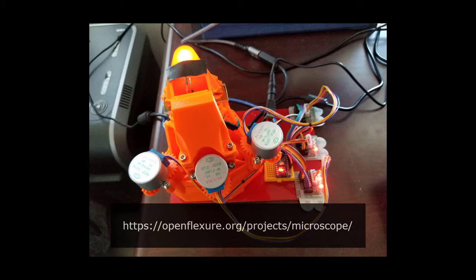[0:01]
Openflexure is an incredible open source project that brings lower cost and accessible microscopes to education in third world countries. There are a few different builds that can be done of an Openflexure microscope, ranging from a simple optical microscope with manual controls to high resolution optics using the same objective lenses as modern microscopes, with motorized autofocus, XY movement, and a camera to record what's seen.
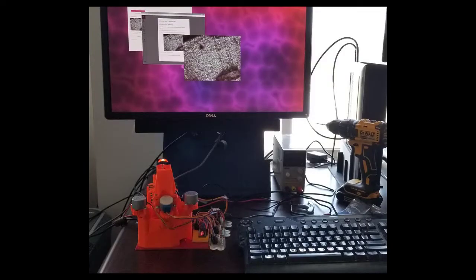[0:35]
I have chosen the motorized lower resolution optics build with Raspberry Pi Camera 2. This build lets you relatively inexpensively have a microscope that can take several pictures of a sample. These pictures can be stitched together with other software automatically into a larger picture.
When I set out to build this microscope, I found it would have been helpful to have a guide that focused on the specific build. I will take you from the beginning of all things you need for this build all the way through the process of stitching together pictures taken by the microscope. I hope you find it both helpful and informative.
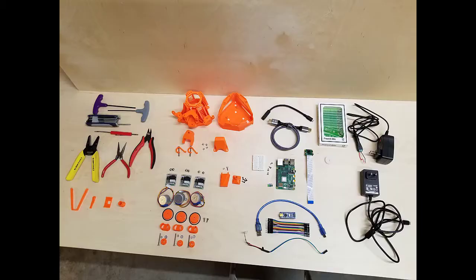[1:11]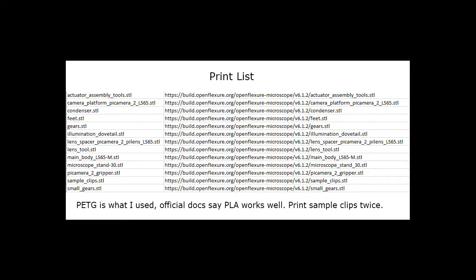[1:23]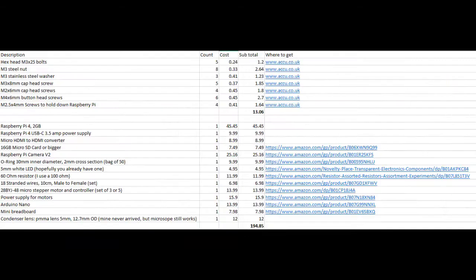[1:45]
And here is a quick view of all the things you will need: tools, printed parts, the motors, Raspberry Pi, something to look at, power. And here is a list of the parts that you'll need to print. Note that I did use PETG, but they say that PLA works well as well. And I mention this later in the video, but make sure you print the sample clips twice. They're actually two different parts, and I prefer one of them.
Here's a list of the non-printed parts you will need. Note that I did try the Raspberry Pi 3, but I found it was running out of RAM and crashing due to what I believe is the higher resolution Pi Camera V2. So I suggest going with the Pi 4 2GB version.
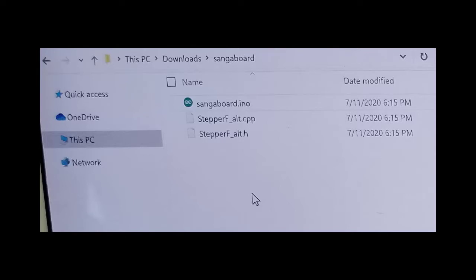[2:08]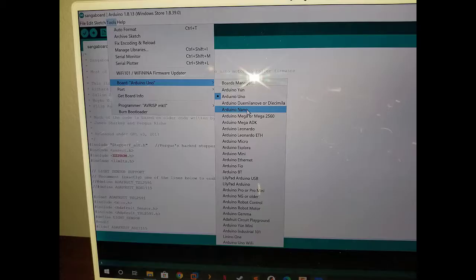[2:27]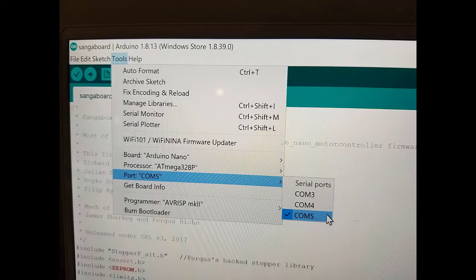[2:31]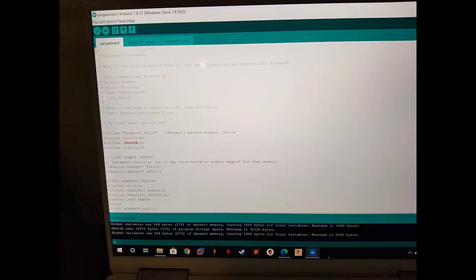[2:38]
Okay, really quickly, for the Arduino code loading to the Nano. When you download the files, make sure that you have them renamed. When I downloaded them from online, they had longer names, and you can get errors when you try to load them. So see what I have here, make sure your files look like that. Then in the IDE for Arduino, make sure you select the Nano as the device that you're writing to. Select the COM port. I find it's usually one of the highest numbers you can see in the list. And then click that button to load it.
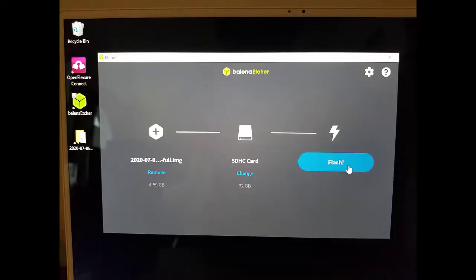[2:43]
Now download the image for the Raspberry Pi and burn it with the Etcher software to your SD card.
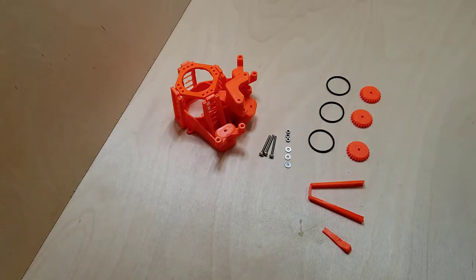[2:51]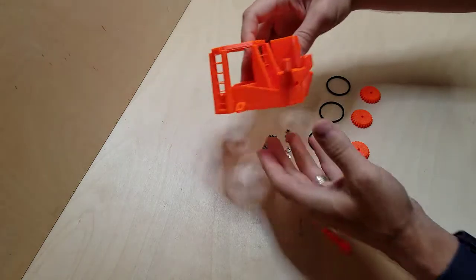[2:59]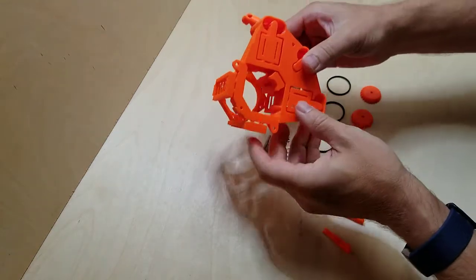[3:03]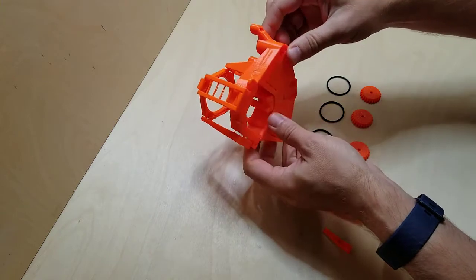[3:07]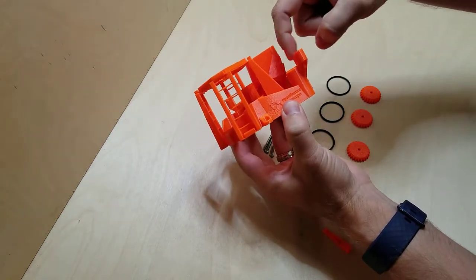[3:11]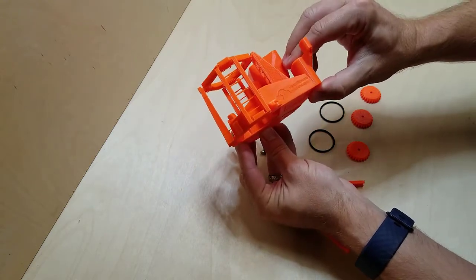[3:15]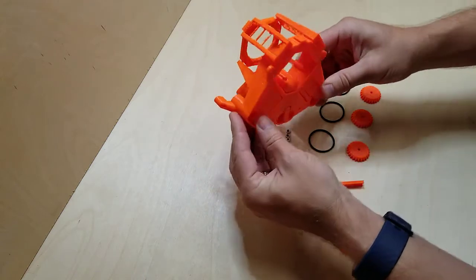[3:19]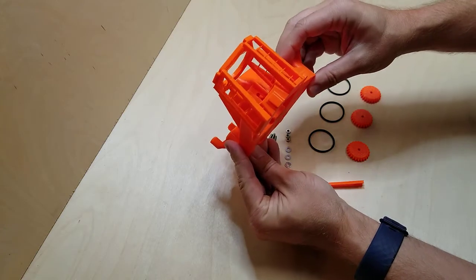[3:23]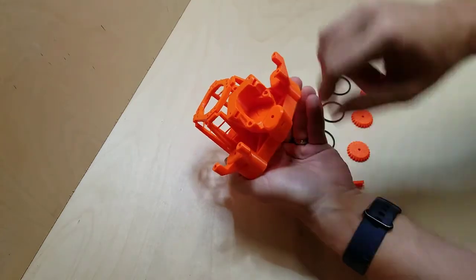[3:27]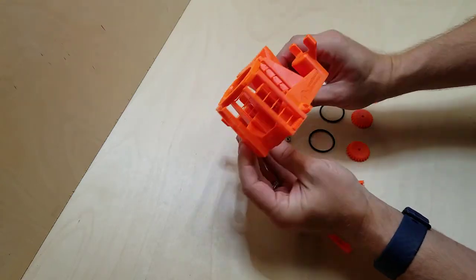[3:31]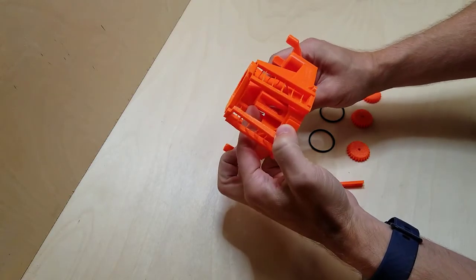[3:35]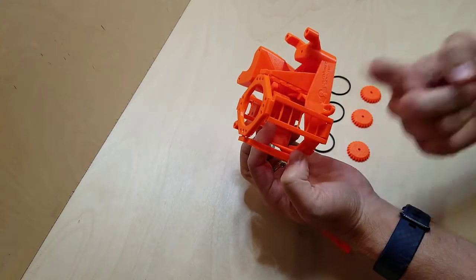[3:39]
All right, so I am assembling the actuators. This is one of the main pieces, the actuator piece. It is amazing what they're doing with flexure, the thing that gives Openflexure its name. So you can see that the control is going to be here, and when it pulls on this, it's moving in that axis, and this one over here is going to move it that direction. So X and Y are controlled by the two controls that will be here, and then Z here, this one is going to move this control in here that you can just barely see, and that's where the camera will be. So that provides autofocus capability.
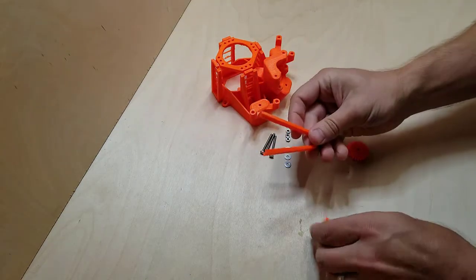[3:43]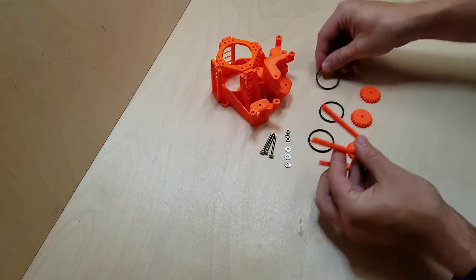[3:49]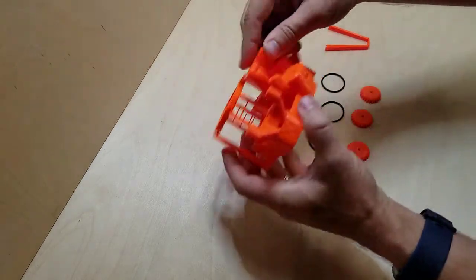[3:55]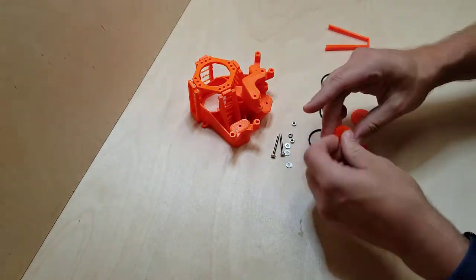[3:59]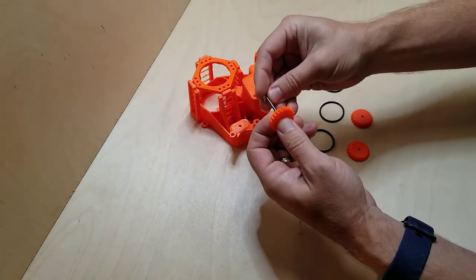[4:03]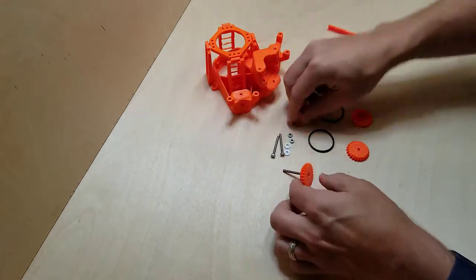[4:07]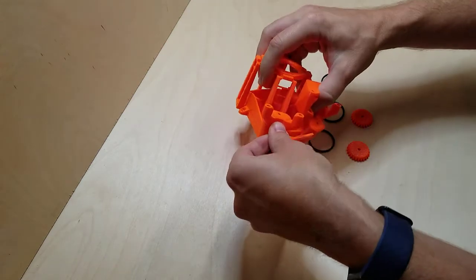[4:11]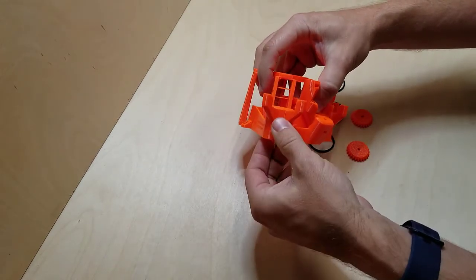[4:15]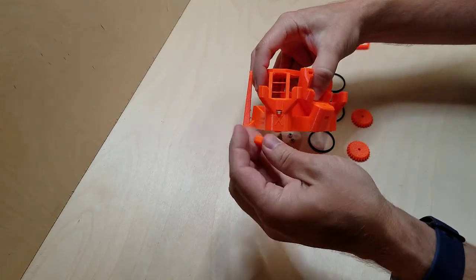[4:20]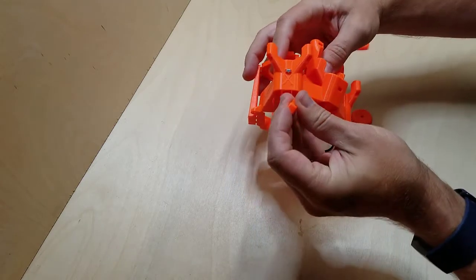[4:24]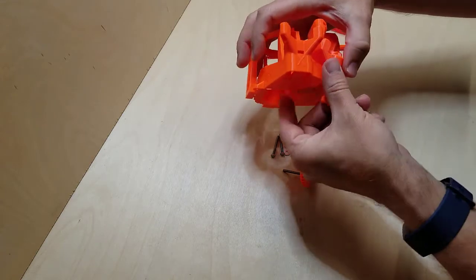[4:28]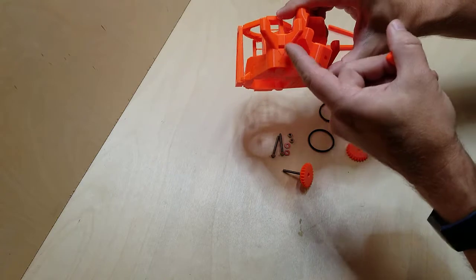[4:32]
Okay, now a couple of these tools are printed. These are going to help push these O-rings into place, and this helps push the nut into place. And so let's get started. So we need to get a nut. See, I was pulling on this, and so it made it so the nut wouldn't go in. All right.
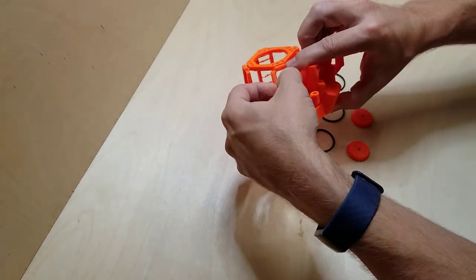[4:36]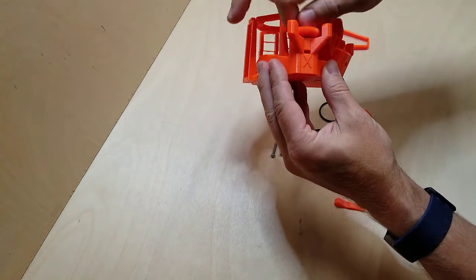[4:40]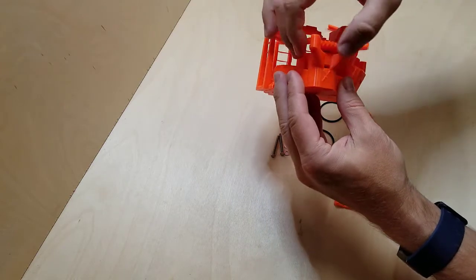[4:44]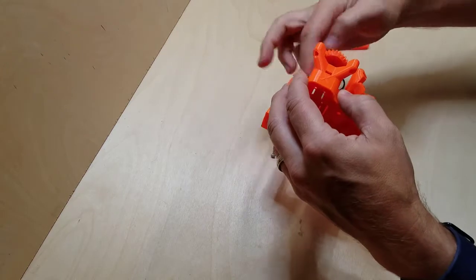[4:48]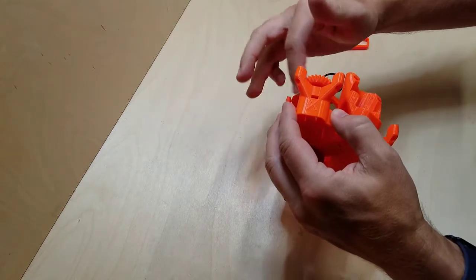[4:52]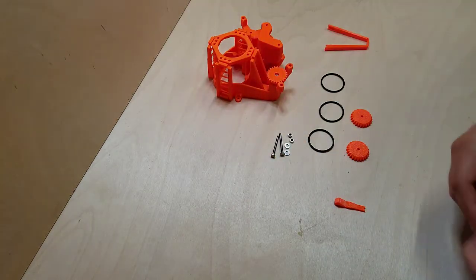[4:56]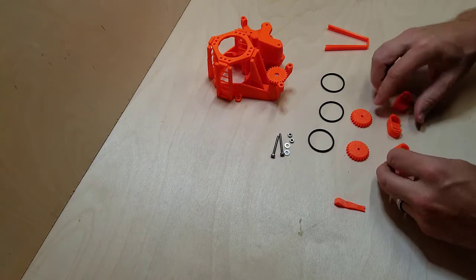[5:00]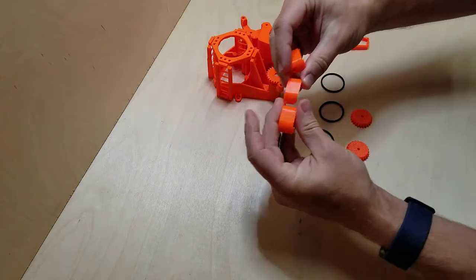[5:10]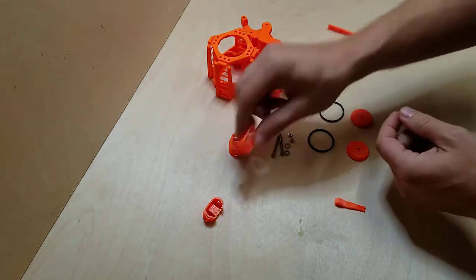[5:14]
Remember, there's three other pieces here that we need. These are the little feet. And notice that one of them is not like the other. This one right here in the middle is a little bit different, at a different angle.
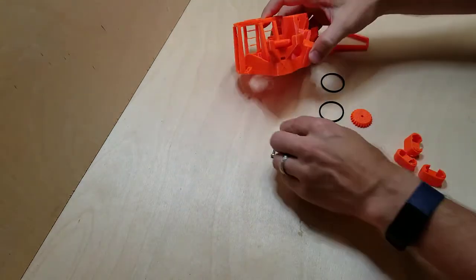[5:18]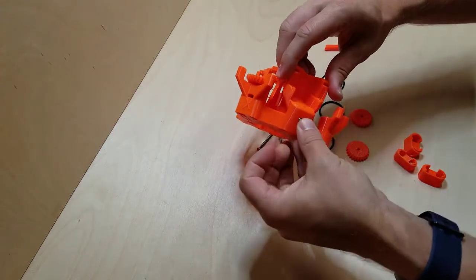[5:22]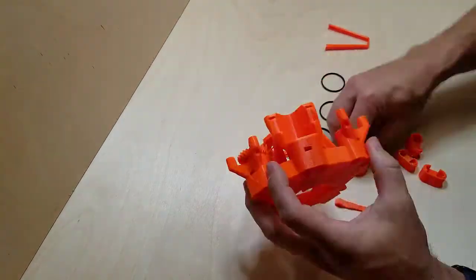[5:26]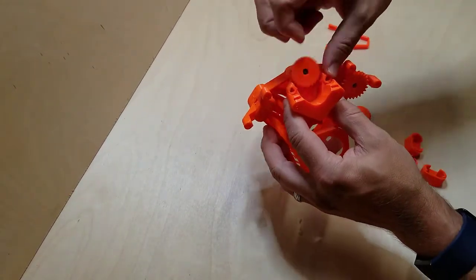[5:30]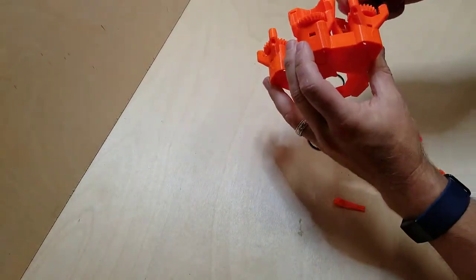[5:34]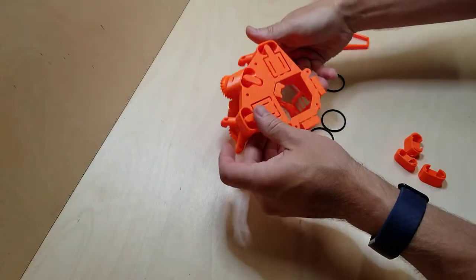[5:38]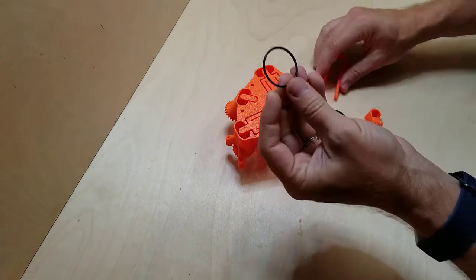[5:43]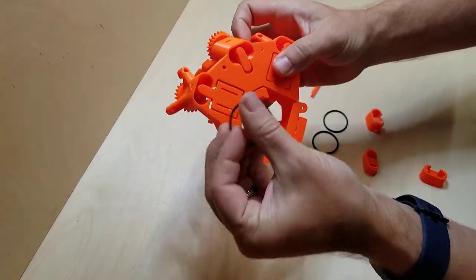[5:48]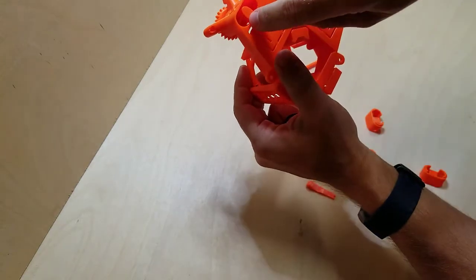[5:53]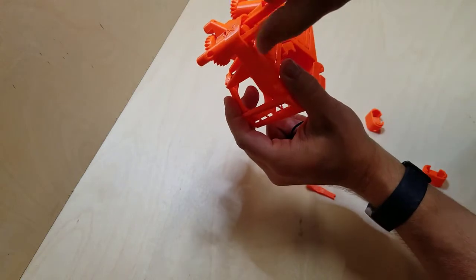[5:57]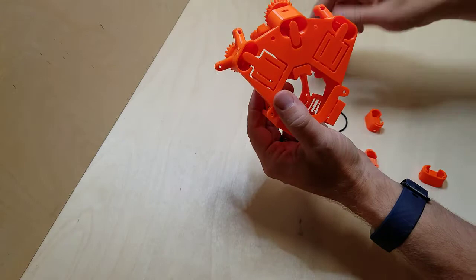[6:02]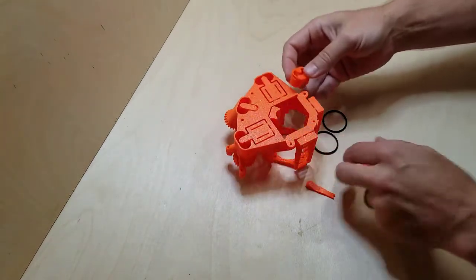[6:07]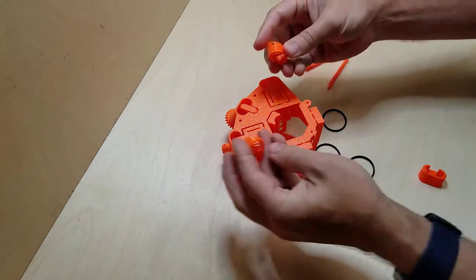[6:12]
All right, now this is a really interesting part. So we're going to take these and shove them in to hook onto little hook pieces in there. Now, when you first print this piece, you are going to need to clip or use this to snap. By just pressing this in here, it will snap some bridges that are in there that are part of the printing process. So let's see, we want to make sure we get this right, and hopefully you have a few extras just in case you screw up.
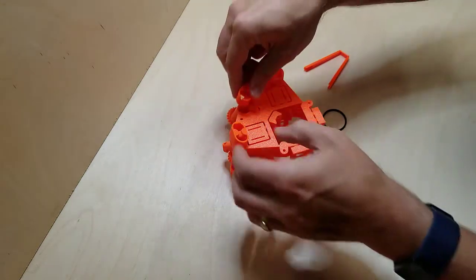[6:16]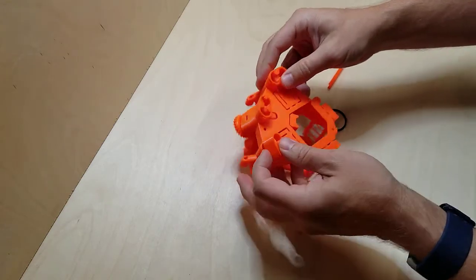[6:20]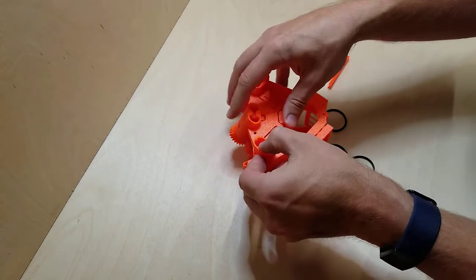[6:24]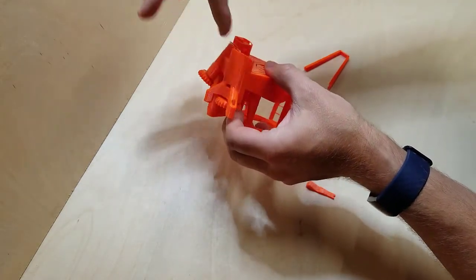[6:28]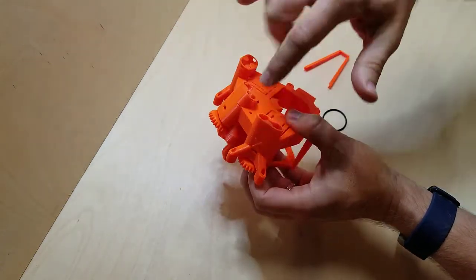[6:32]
Let's make sure these look right. Nope, this one goes here, this one goes here. And what I'm looking for is that it is straight down. The whole line is straight there. This middle one is different. The two on the sides are the same.
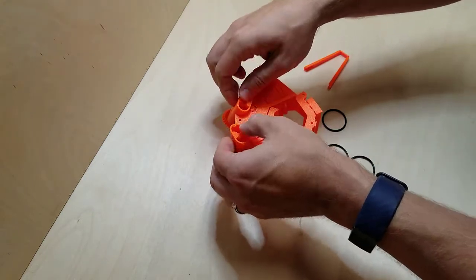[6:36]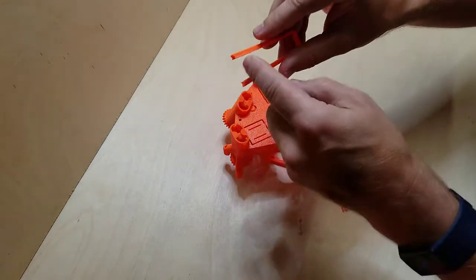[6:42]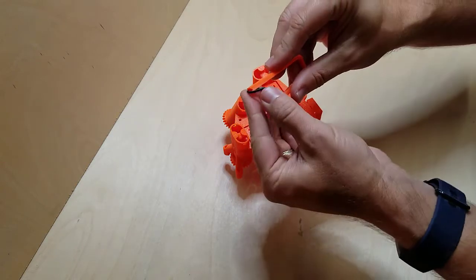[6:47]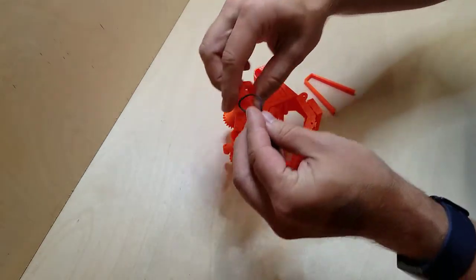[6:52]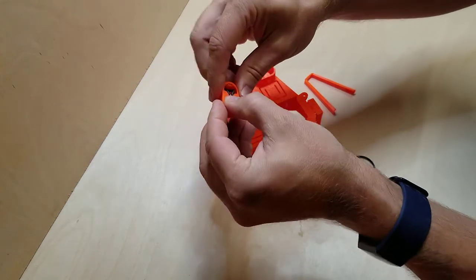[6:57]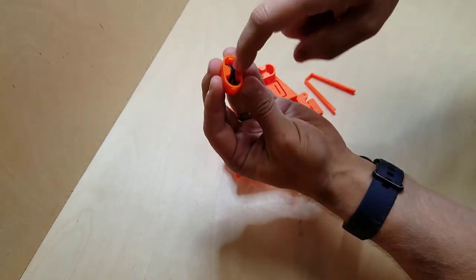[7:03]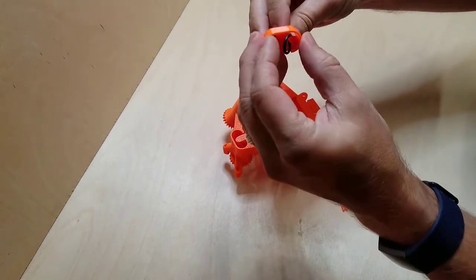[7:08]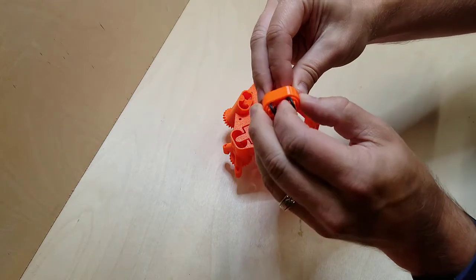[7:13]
Okay, so now I'm going to take the O-ring and their little hook pieces on here. Let's see here. It's a good way to do this. Okay, how about I loop it through here? And then afterwards, when it's tight, I want the O-ring resting in there. So now I'm going to stick this in here. Let me get a good shot.
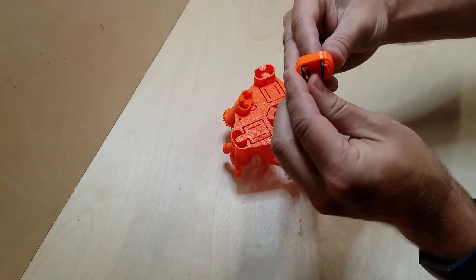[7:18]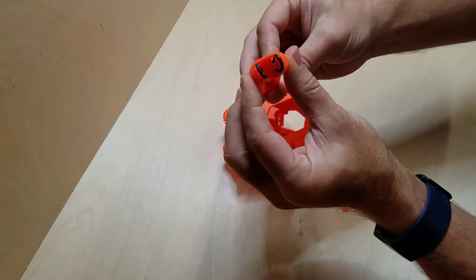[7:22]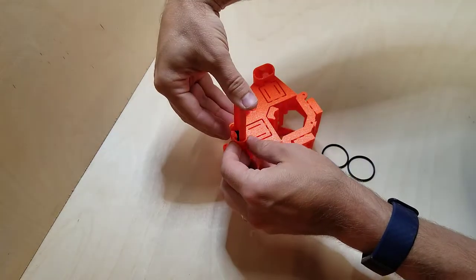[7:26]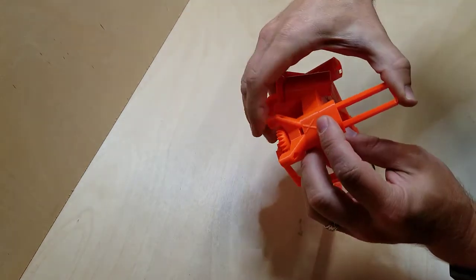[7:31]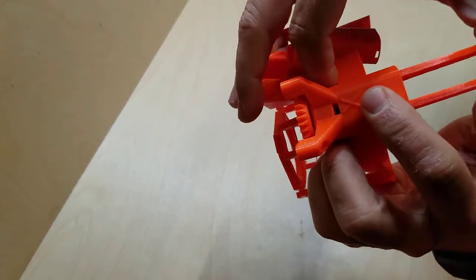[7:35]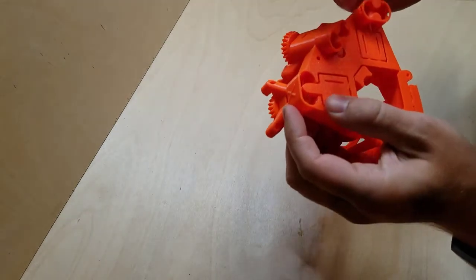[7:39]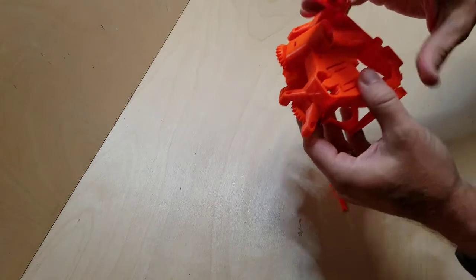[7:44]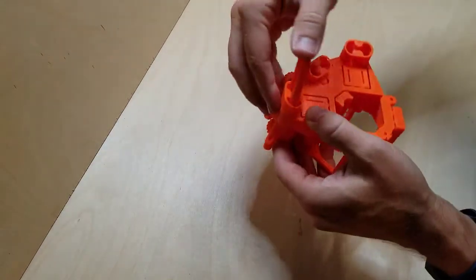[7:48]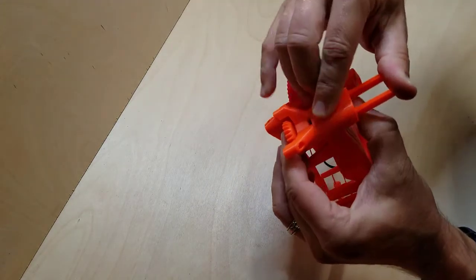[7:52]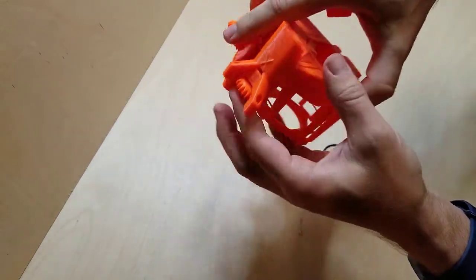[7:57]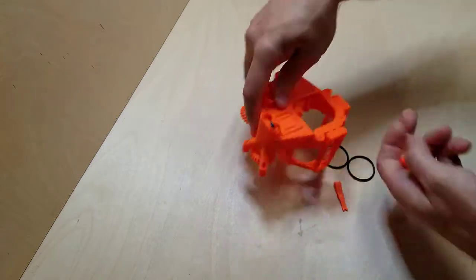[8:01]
Okay, so that's how I want to be able to just push down, and it's going to then hook onto, you're going to hear a click. You're not hearing a click. There it is. All right, so I used my finger and held this down here. Okay.
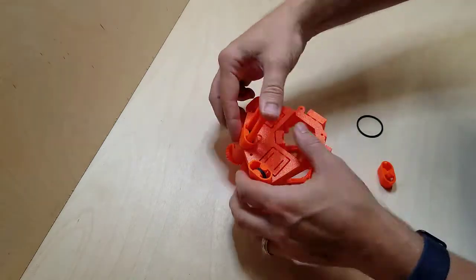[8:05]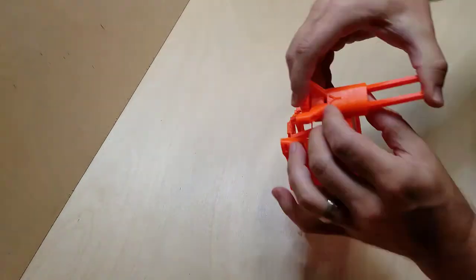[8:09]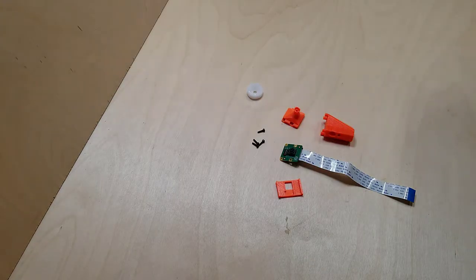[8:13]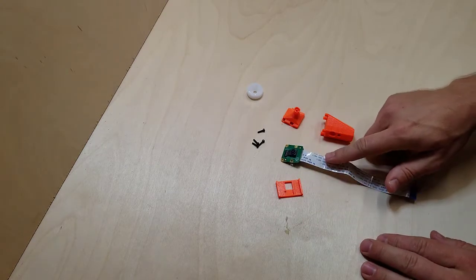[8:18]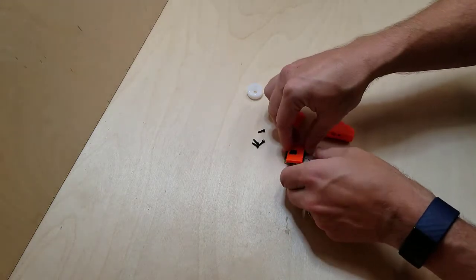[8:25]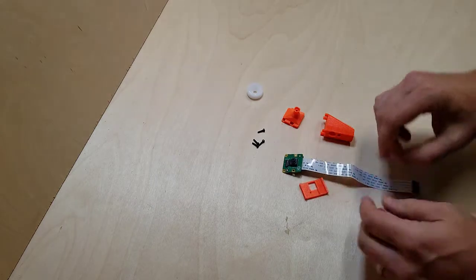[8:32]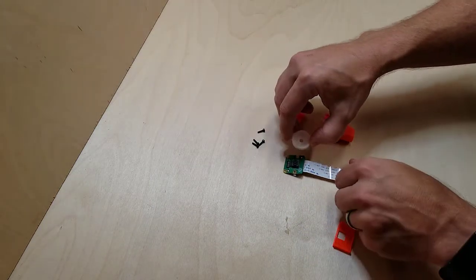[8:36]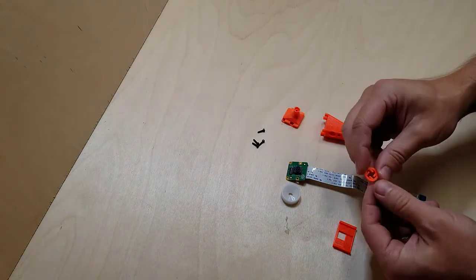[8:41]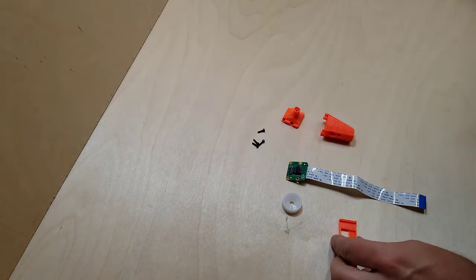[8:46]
Okay, this is the basic optics module. I have the Raspberry Pi camera version 2, but it can also be done with the version 1. This is a tool you can print to help you work with this piece, because it's pretty fragile. It's going to help you hold on to it. This ribbon is fragile, be careful with that. This tool comes with the Raspberry Pi Camera 2. It does not come with the version 1, but you can print this tool to help you do the same thing that this does with version 1.
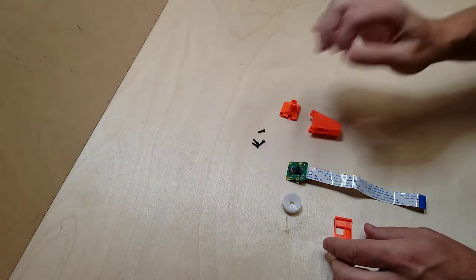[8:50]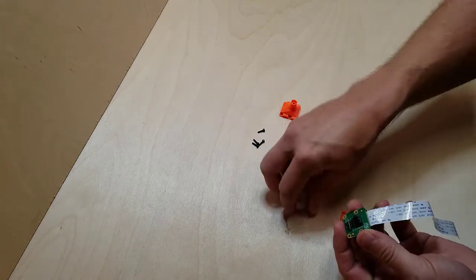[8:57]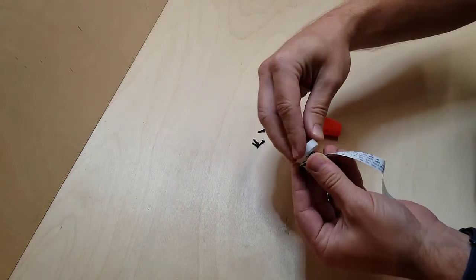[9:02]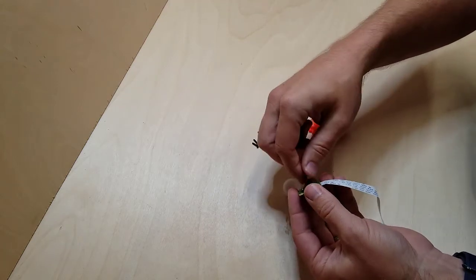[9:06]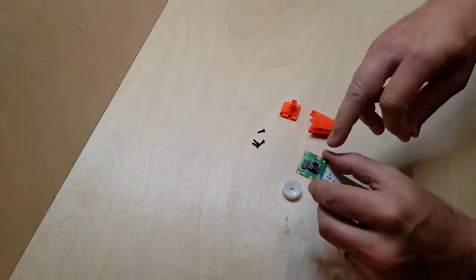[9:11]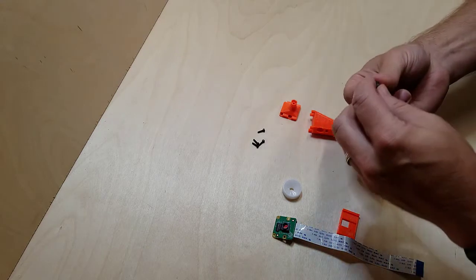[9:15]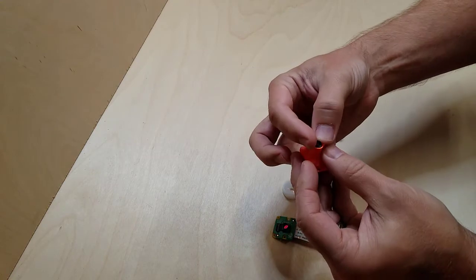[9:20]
And then this is the mount that we'll use, we'll connect here. So we'll get started here. What we do is we take this lens off. It unscrews. This is pretty cool. So we'll use this tool to go on top here. And then we want to be careful because it can get dusty. So this is the sensor that we need to keep clean. And this lens, so lens is going to go this way.
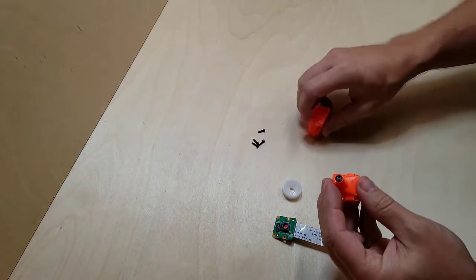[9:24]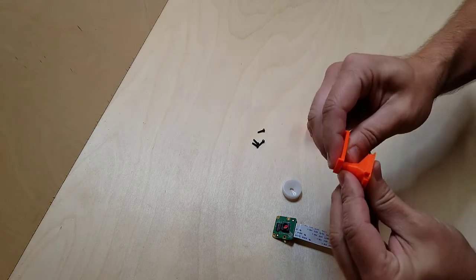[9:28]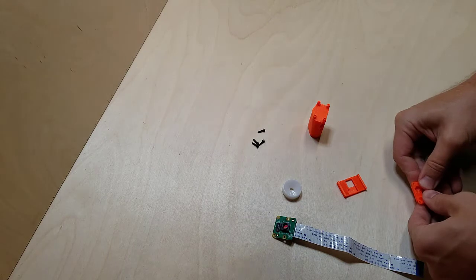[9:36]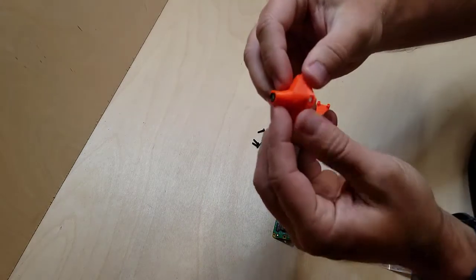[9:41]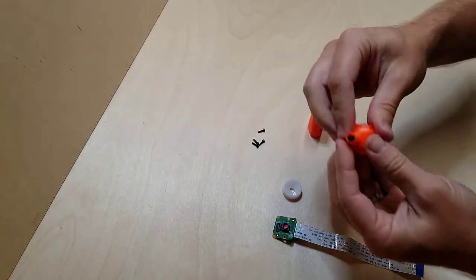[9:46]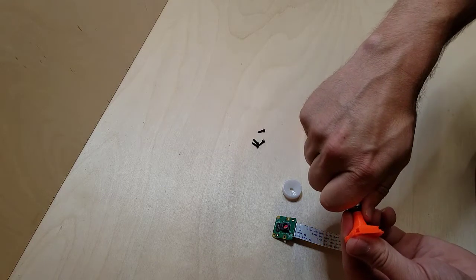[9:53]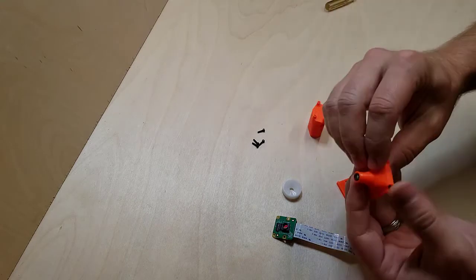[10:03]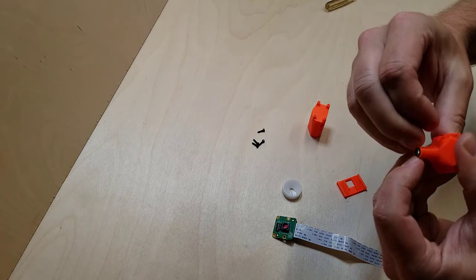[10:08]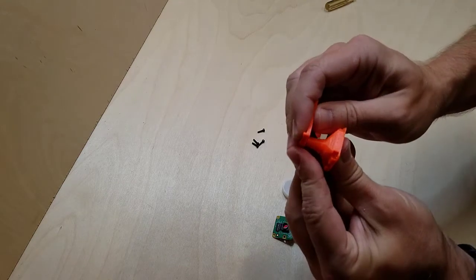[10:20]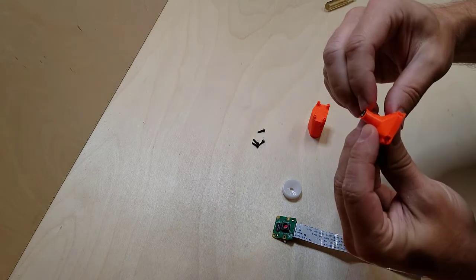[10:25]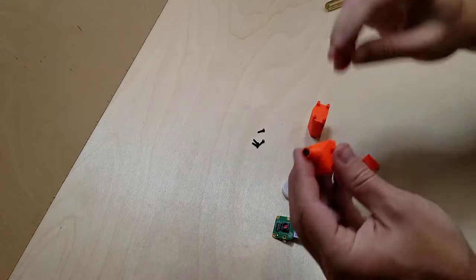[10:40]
I'm going to press it in here. I think we want it to be flat. Flat and tight in there as best we can. I don't want to pop the lens. I never really got the lens in there very tight before. Let's see. Doesn't look straight in there. Well, we'll go with that.
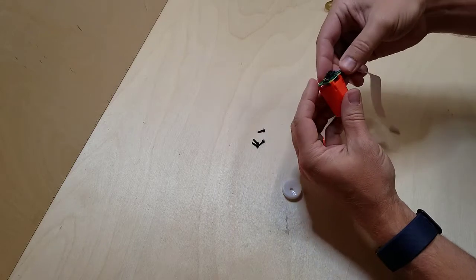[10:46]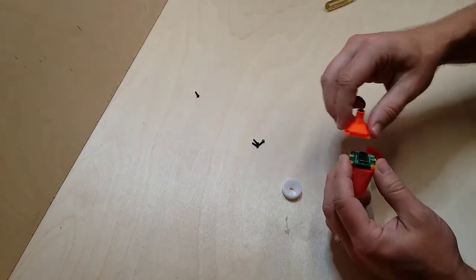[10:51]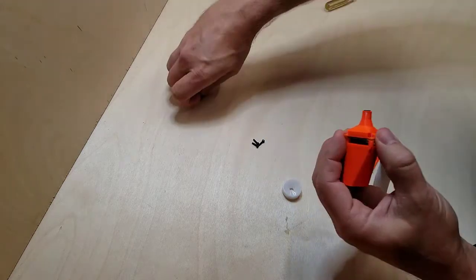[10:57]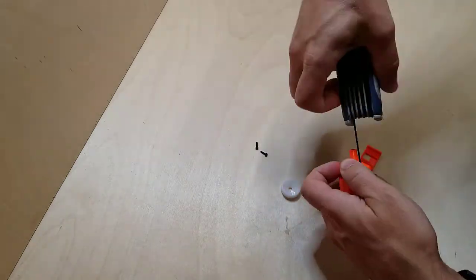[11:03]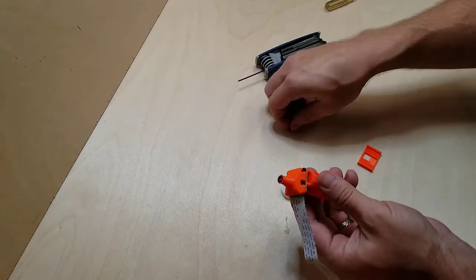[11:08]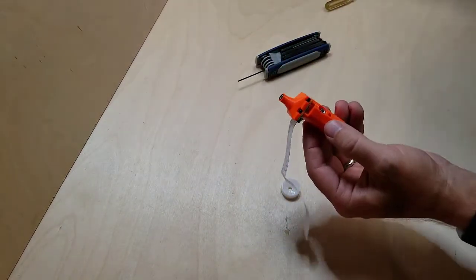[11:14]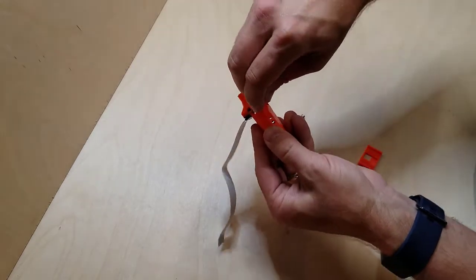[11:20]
Okay, looks like we're gonna have the cable coming out this opposite side. Okay. And there. We're gonna put that all together that way. M3s. So I'm going to slide the nut there. Slide that in there. Finding this tool to be real helpful too.
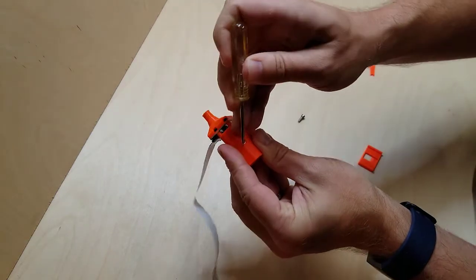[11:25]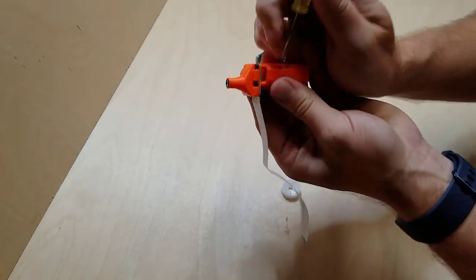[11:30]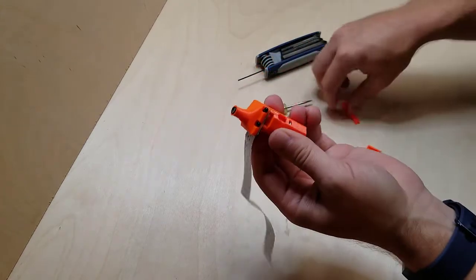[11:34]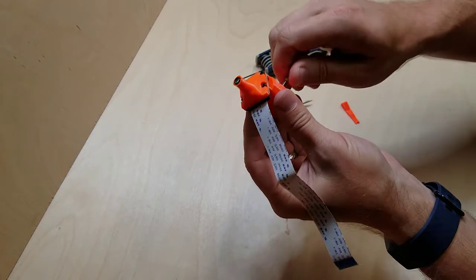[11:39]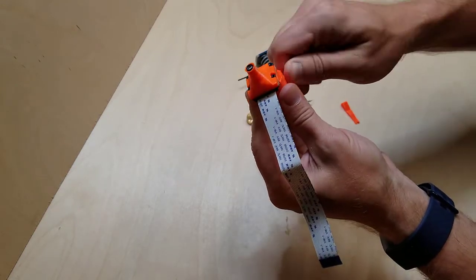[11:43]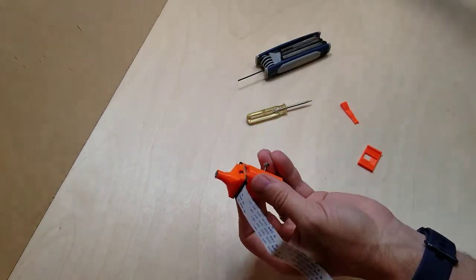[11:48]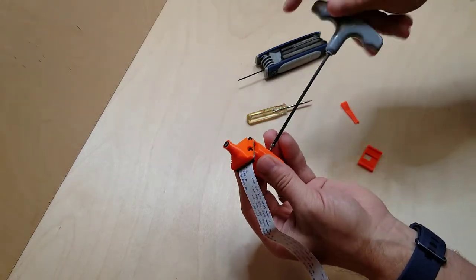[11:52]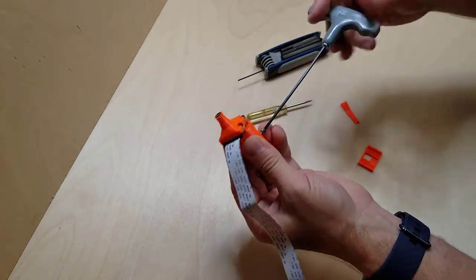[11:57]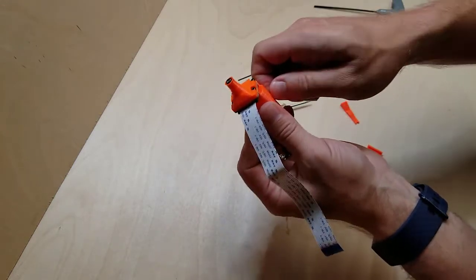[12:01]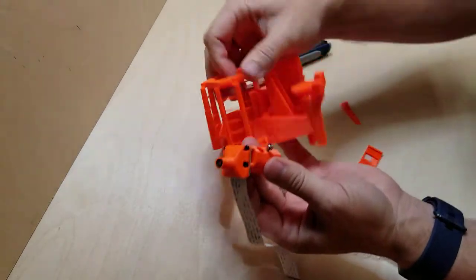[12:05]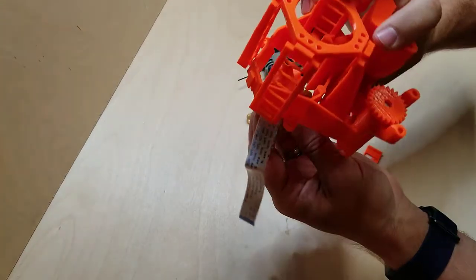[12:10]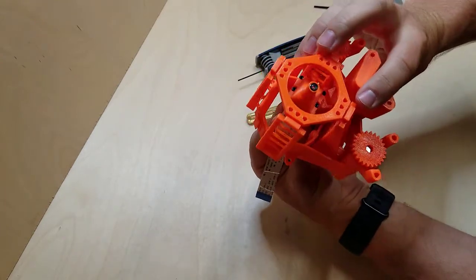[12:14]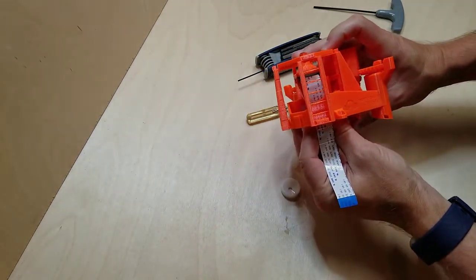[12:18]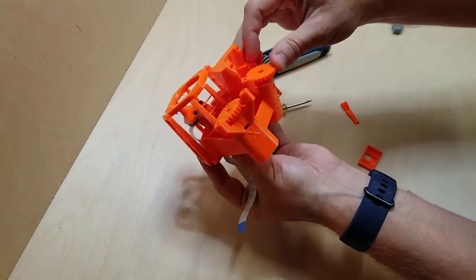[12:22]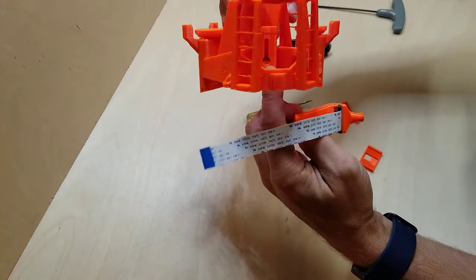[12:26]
So this is going to let us mount the camera to the actuator part, the main part here. Camera is going to sit in here. Let's see if we can get a good view of that. It's going to sit in here so that the Z-axis can move it up and down a little bit for focus, and so that that bolt is going to rest in here.
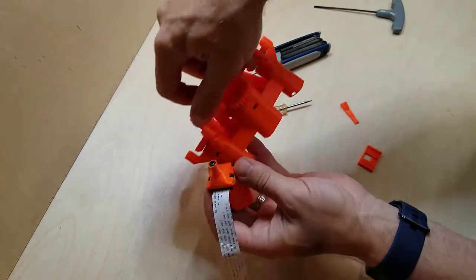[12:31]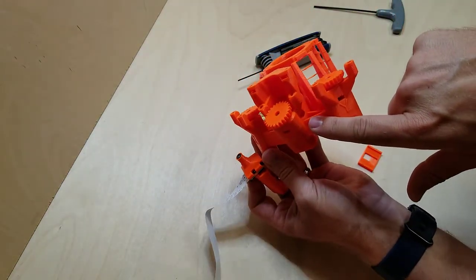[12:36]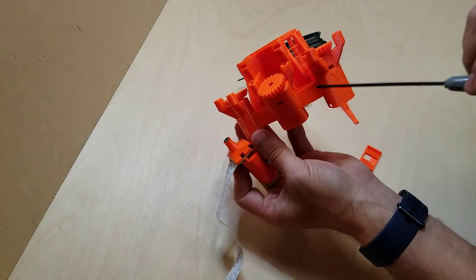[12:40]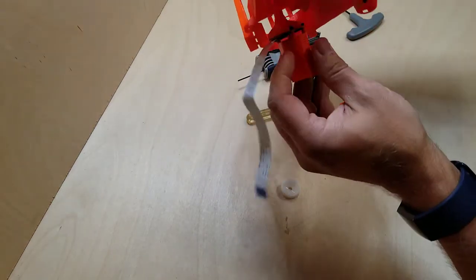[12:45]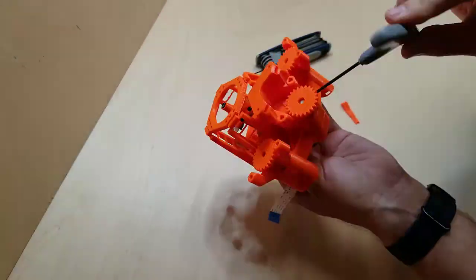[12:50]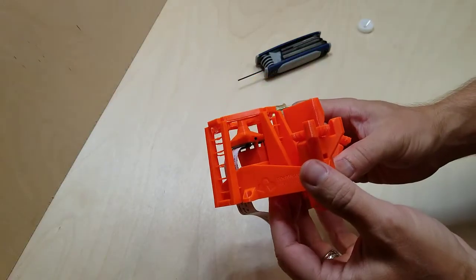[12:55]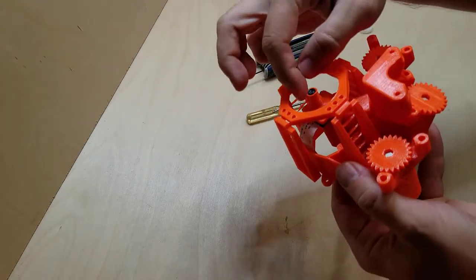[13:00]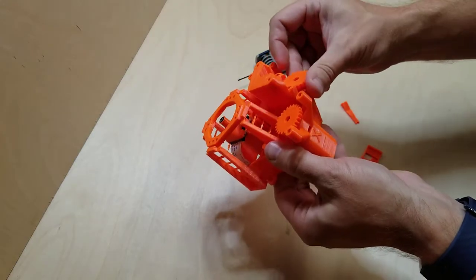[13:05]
Now, they actually worked in an access point here. They don't really mention that, so I wanted to point that out if you look straight down here. So I'm going to be able to get the Allen wrench down in here to tighten this piece up. So I'm going to do that now. All right, so looking at that, looks like it is just barely below the surface there. So now rotating this is going to move that up and down.
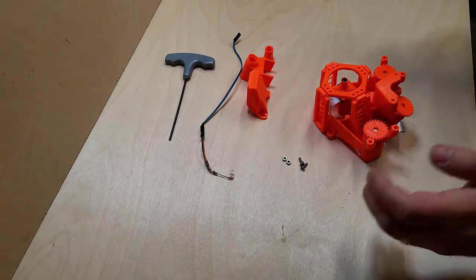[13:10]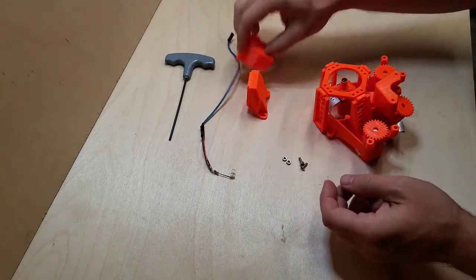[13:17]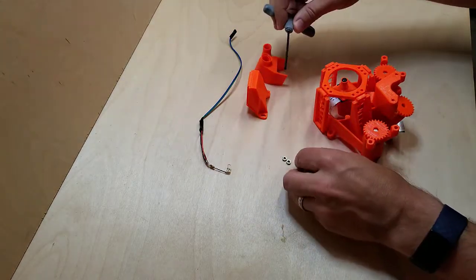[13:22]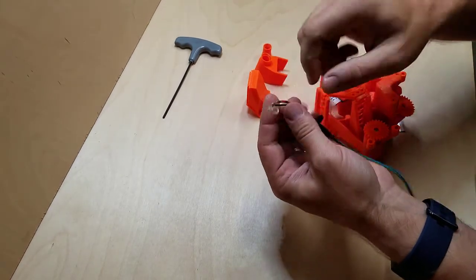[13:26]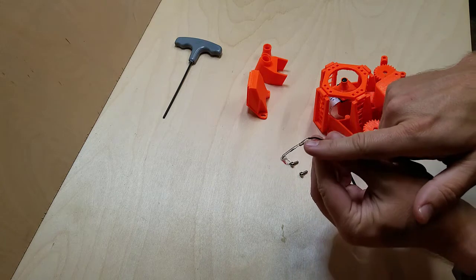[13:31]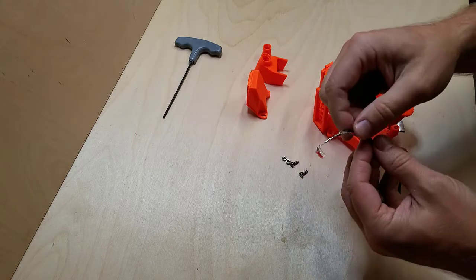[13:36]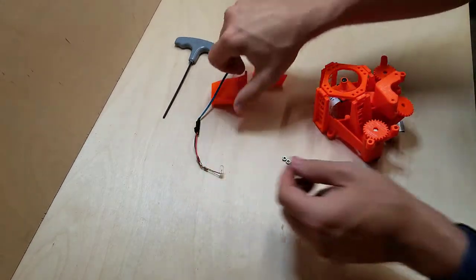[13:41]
Okay, now we're doing the illumination module. Now this is not the reflective illumination module, just more of a straight one. So we need the tool we'll need for the bolts. I have a 5mm white LED. It's pretty bright, and I went with a 100 ohm. The Openflexure instructions will say a 60 ohm. I've seen other people say 80 is fine. I'm doing fine with 100. So somewhere in there seems to be just fine.
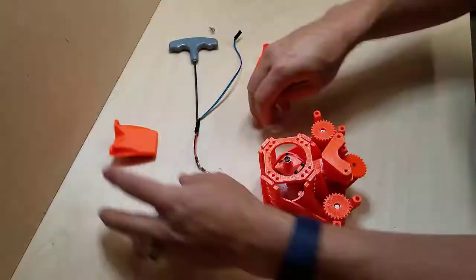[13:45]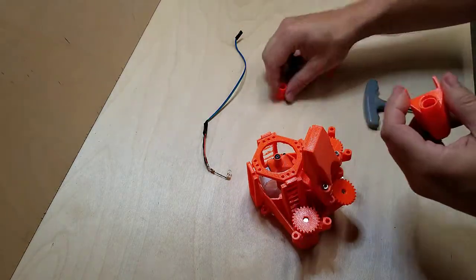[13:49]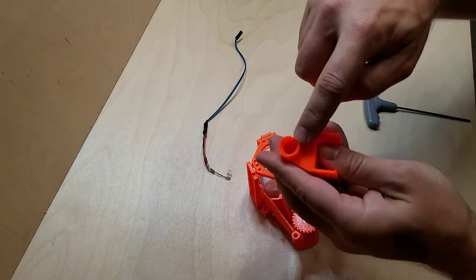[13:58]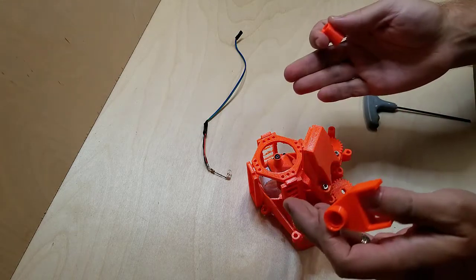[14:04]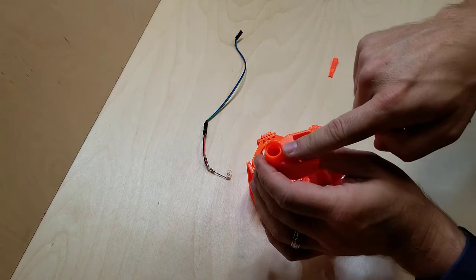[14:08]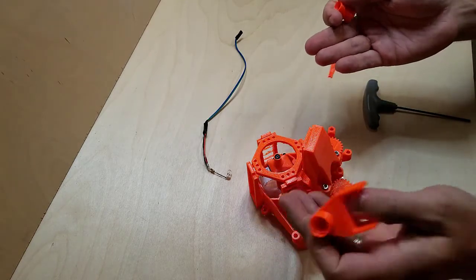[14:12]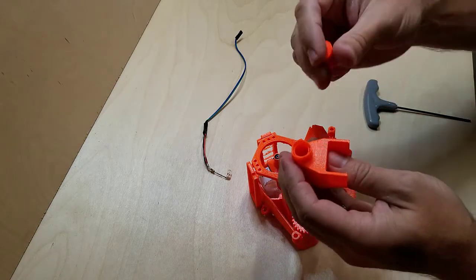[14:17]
Okay, now this tool that you print is for pushing on the objective lens, the condenser lens, they call it. And it just hasn't arrived in like 2 months. I have been able to get pictures out of this that are pretty good, but having the condenser lens here will help brighten the pictures you're taking so that you have better contrast and can get better results.
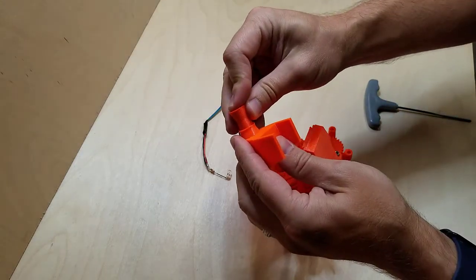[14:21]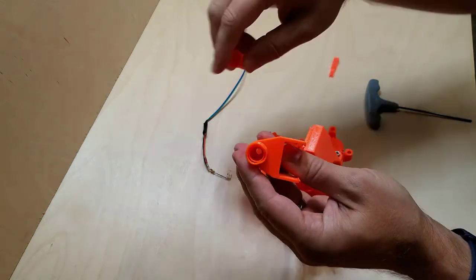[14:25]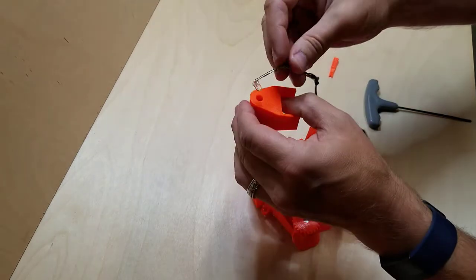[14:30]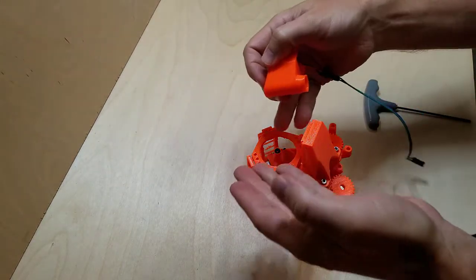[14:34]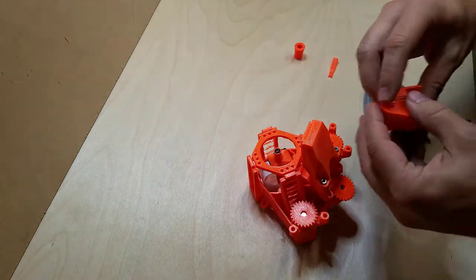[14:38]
So you would use this to help press the lens in here as tight as possible. And what that's doing is it's taking the light from up here that's shining down into the condenser lens, and it's going to spread it out to be even over the sample piece.
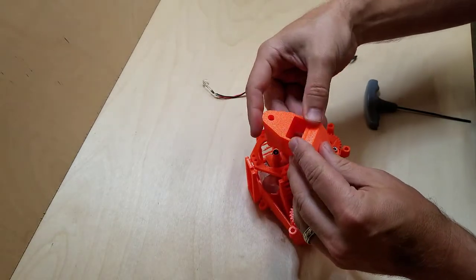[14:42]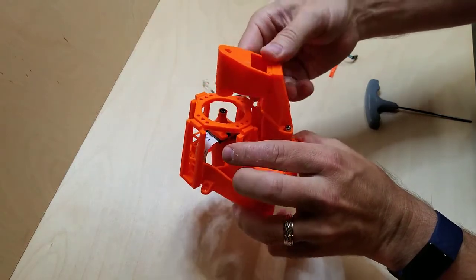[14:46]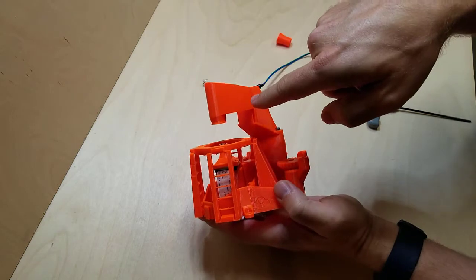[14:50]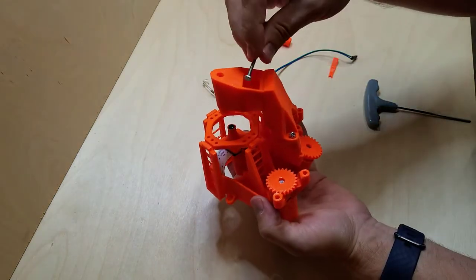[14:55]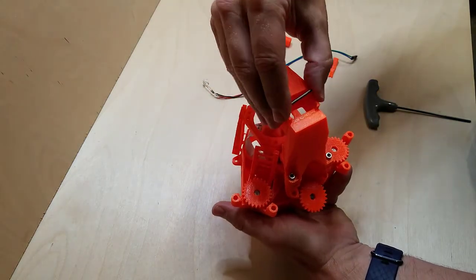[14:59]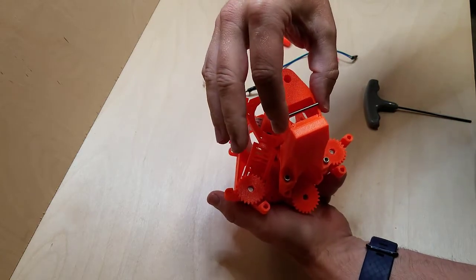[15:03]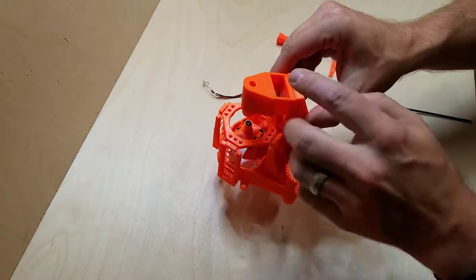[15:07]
So now this part just slides right over here, and I would note that it's a little loose. So an improvement that I would suggest is doing something like drilling a hole straight through and putting a long bolt, maybe a 30mm bolt that you could put across here to tighten it, to really grab on there. But I didn't have any to try that out. For the most part, I can get this to stay in place, and a piece of tape probably will work just fine.
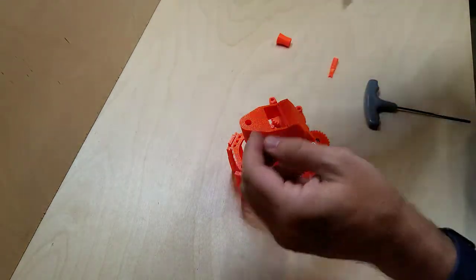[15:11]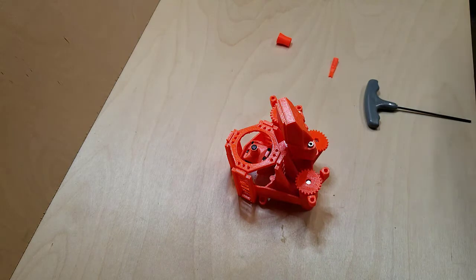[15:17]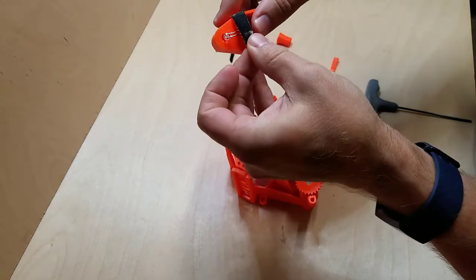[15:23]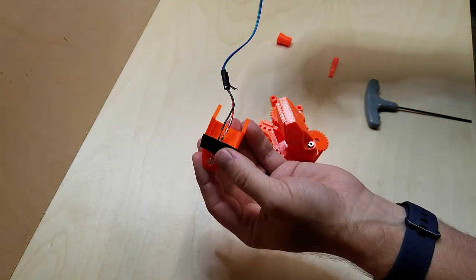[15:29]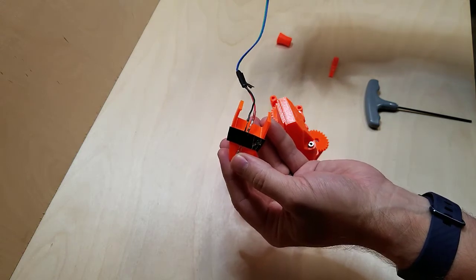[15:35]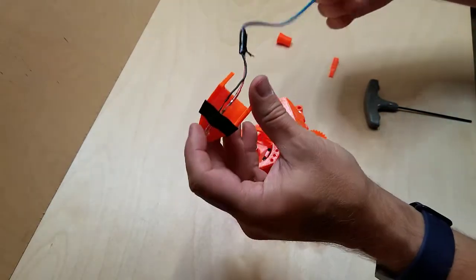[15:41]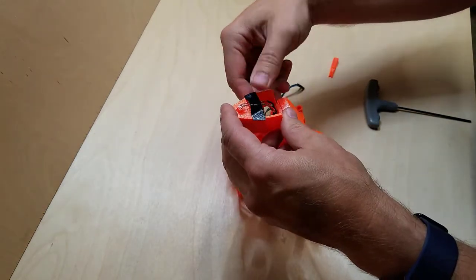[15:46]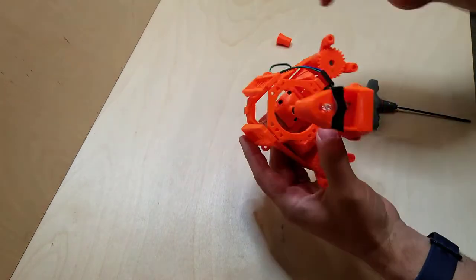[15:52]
So this will go on something like this, and some tape, to just hold that light in place. And now this cord needs to be at least 11 inches to 12 inches. That is going to plug into the Raspberry Pi to get its power. Okay, and that is the illumination module.
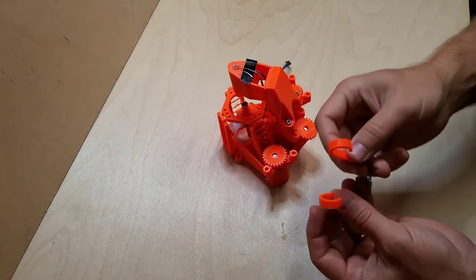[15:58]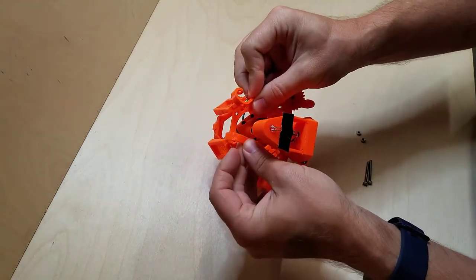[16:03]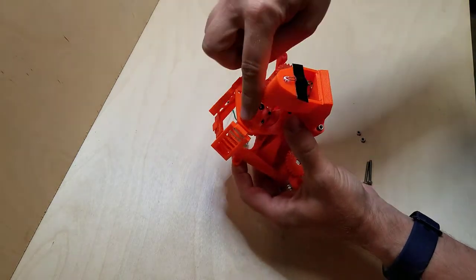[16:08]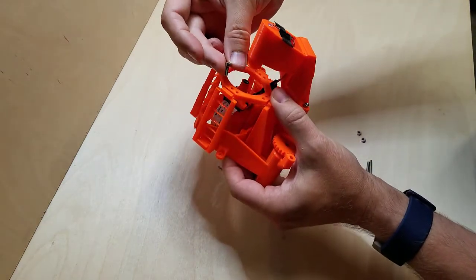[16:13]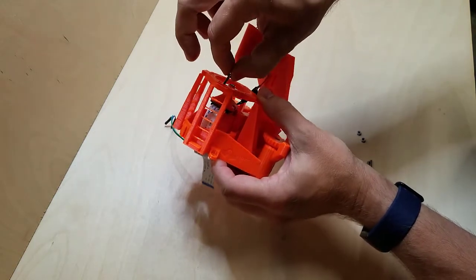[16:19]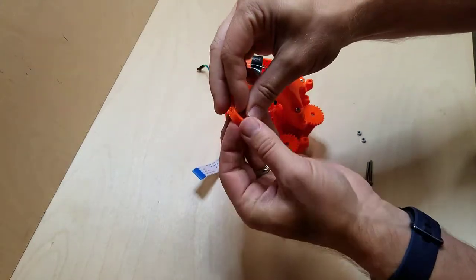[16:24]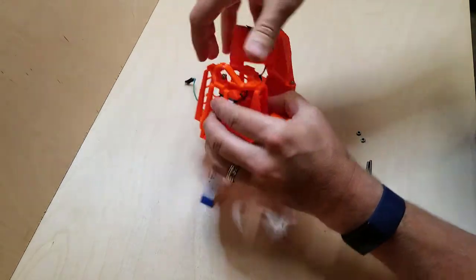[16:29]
All right, now is the sample clips. That's these here, and they get mounted here, or anywhere really. What I found though is that I had to drill out these holes. Using even the shorter 10 millimeter length bolts, I couldn't mount these. Let's see if I put it through here, and then I put that in. There's just way too much play in there for it to be tight.
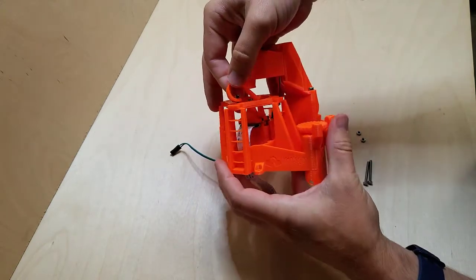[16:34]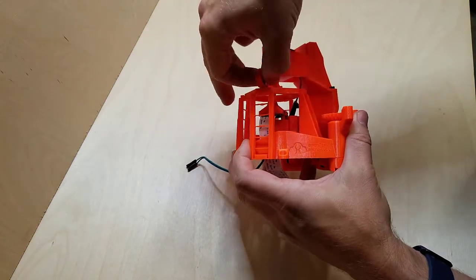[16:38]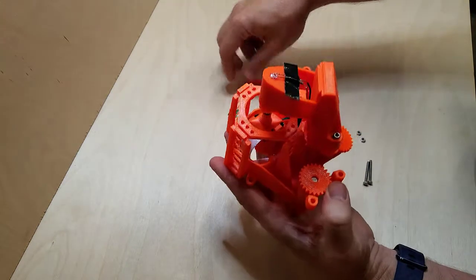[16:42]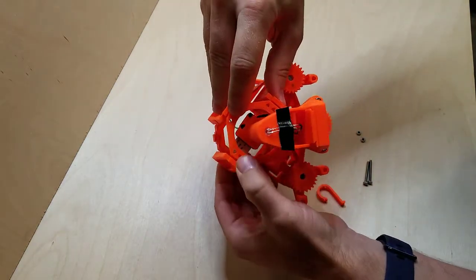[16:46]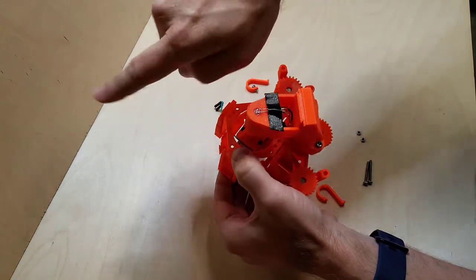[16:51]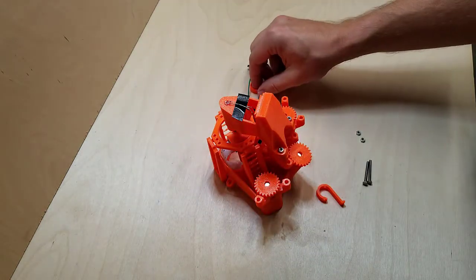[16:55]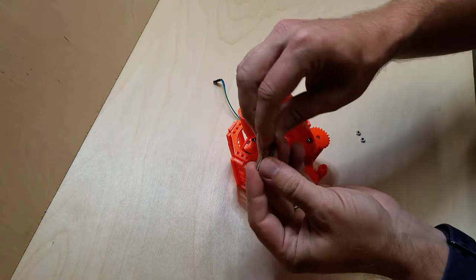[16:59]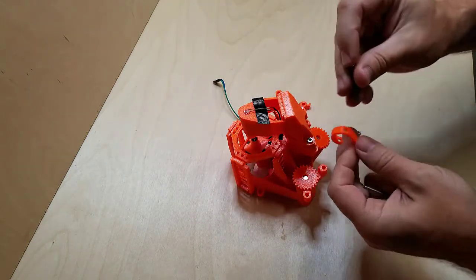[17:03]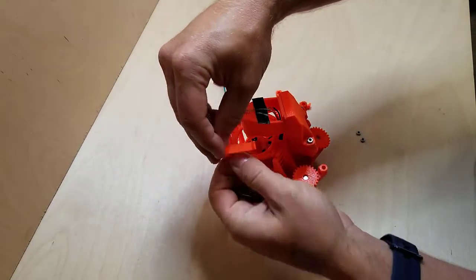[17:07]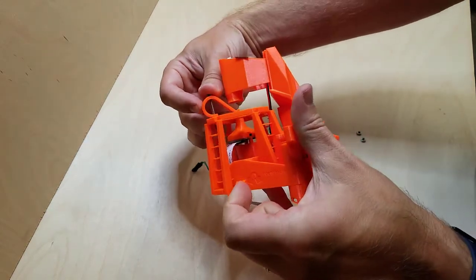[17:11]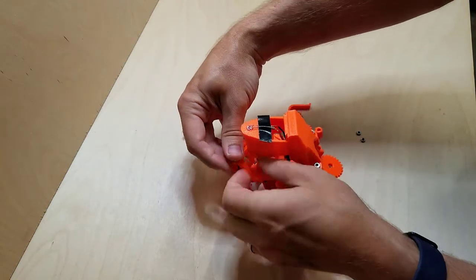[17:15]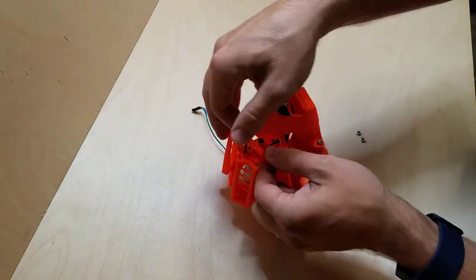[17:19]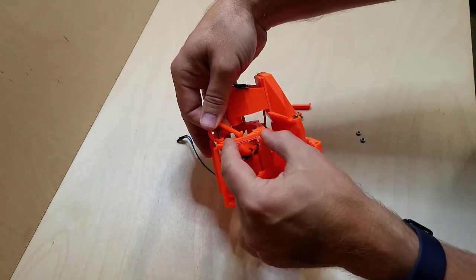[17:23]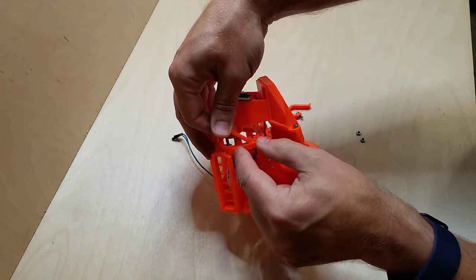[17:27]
So my solution was to use a 1/8 inch drill bit and to drill all the way through these holes. And I recommend using the centermost ones on the outside, but I would probably drill out a few more so you can play with it if you want to. So I ended up using the 25 millimeter length bolts to go through the top and bottom holes, and then go here and tighten that up. By using those far out centered holes you get more space for your sample slide. If it's here, I found it was just too tight a space for the sample to fit.
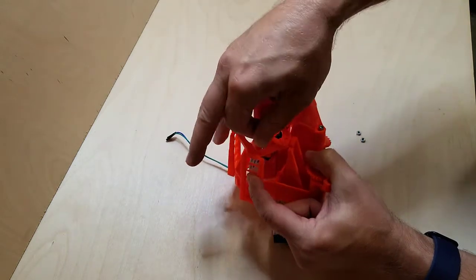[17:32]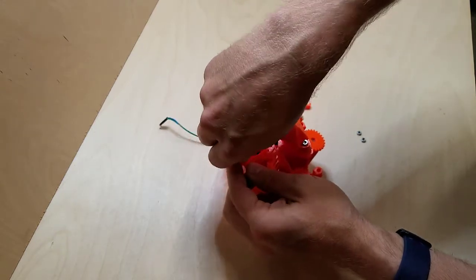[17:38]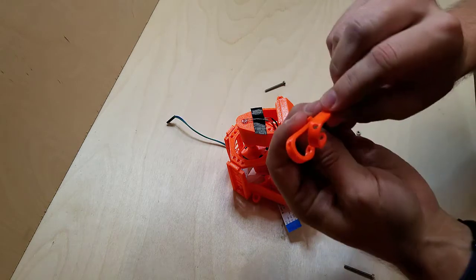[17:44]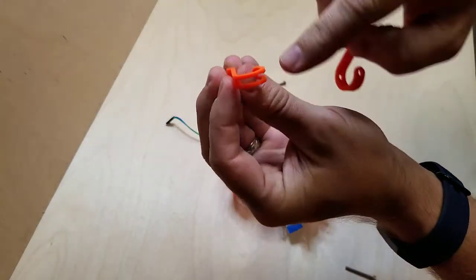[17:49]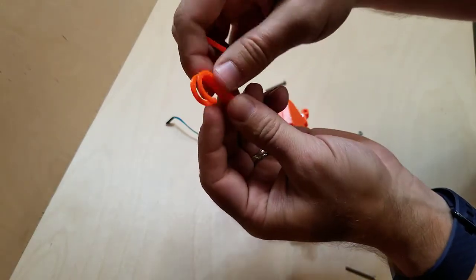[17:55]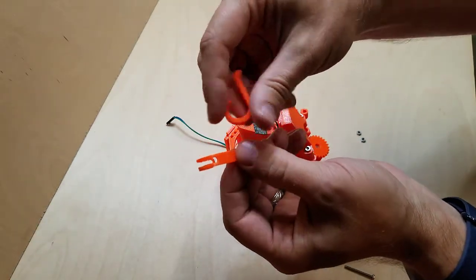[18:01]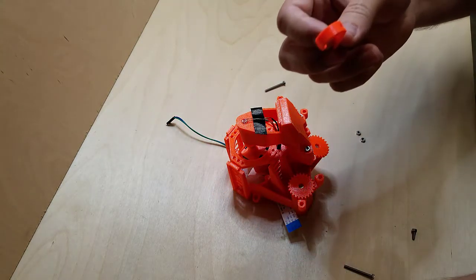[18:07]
The other thing to note about these sample clips is that the STL model looks like it should be two solid pieces when it comes out, but of the two that it's printing, one of them has this interesting gap here. I could see how it might be useful in some cases, but it's been problematic for me. It doesn't fit quite as well. So I'd suggest printing that twice so that you can get two of this style. Anyway.
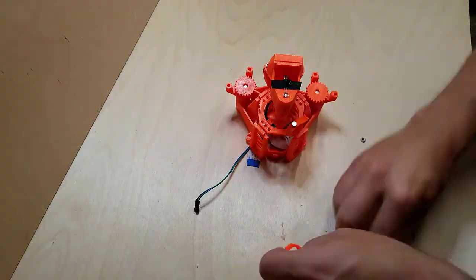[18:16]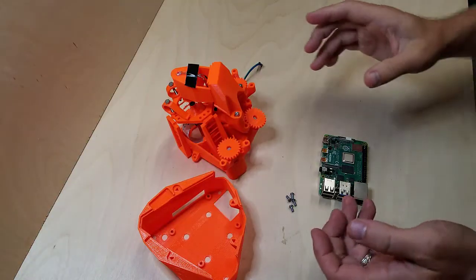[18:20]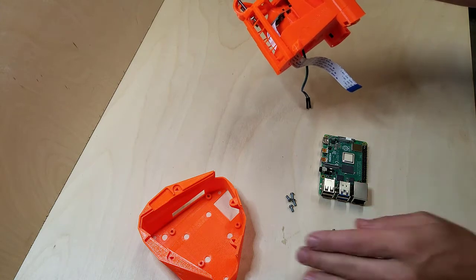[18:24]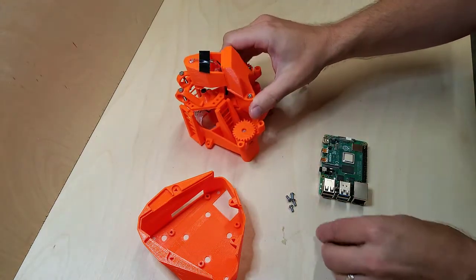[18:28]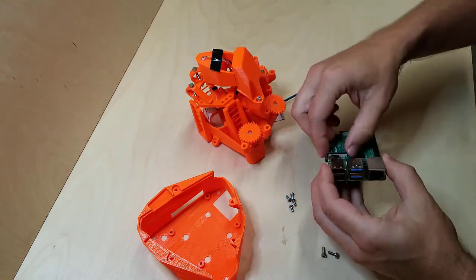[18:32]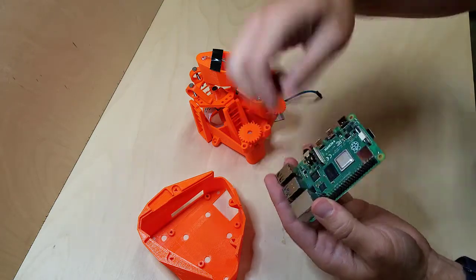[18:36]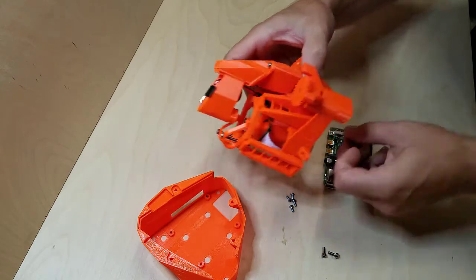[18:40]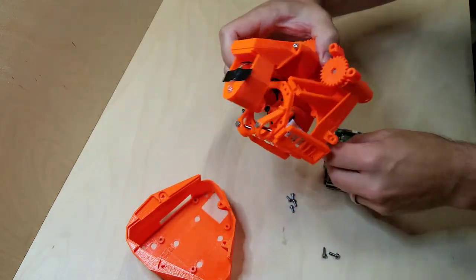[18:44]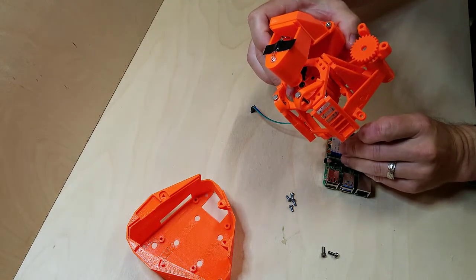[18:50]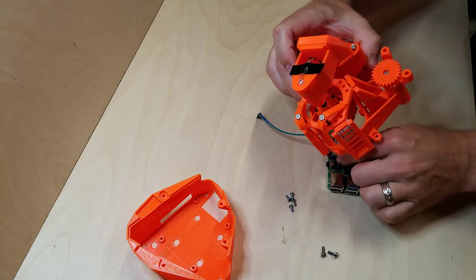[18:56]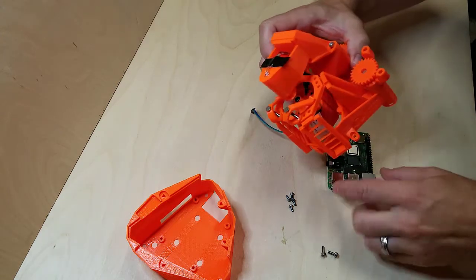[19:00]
Okay, so now we will connect the light and camera to the Raspberry Pi board and mount it inside the housing. So, let's see, I'll lift this piece up here for the ribbon cable, and I'll put the ribbon cable in. See, I'm putting the pins on this side. Once they're in there, I will push down on that plastic piece to lock it in place.
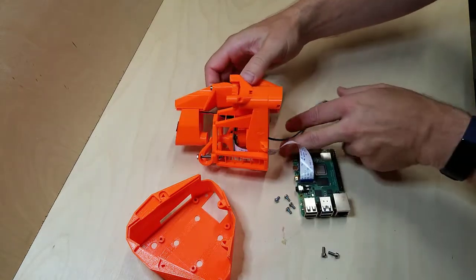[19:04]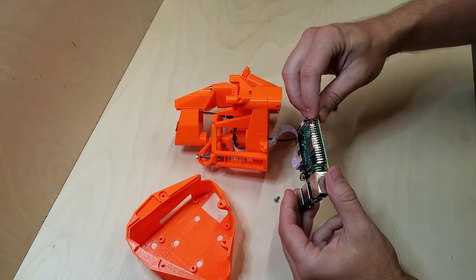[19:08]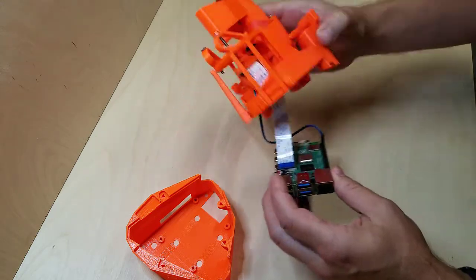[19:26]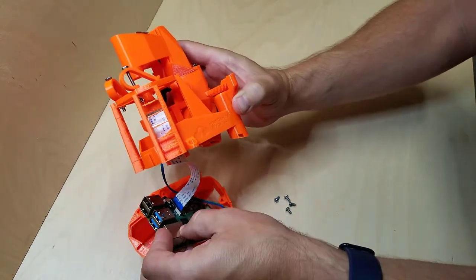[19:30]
Now for the LED, we're going to use the second and third pins on the outside here. So not this first pin, but the second and third pins. The second pin is going to be power, it's going to be positive. That's my green, and blue is ground. The LED. Okay, so that's what we have right now. This is going to get mounted in here.
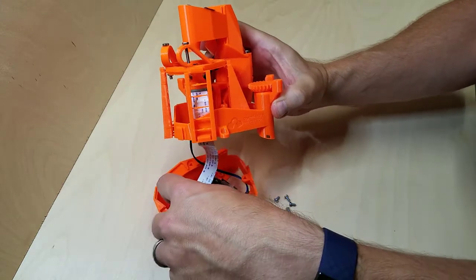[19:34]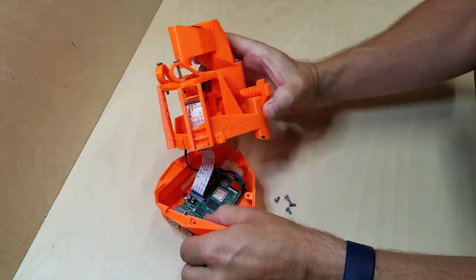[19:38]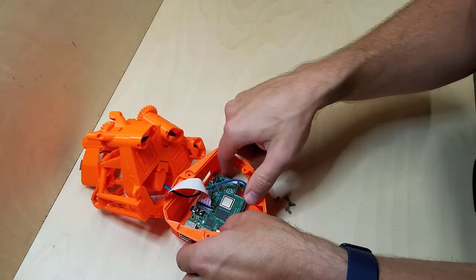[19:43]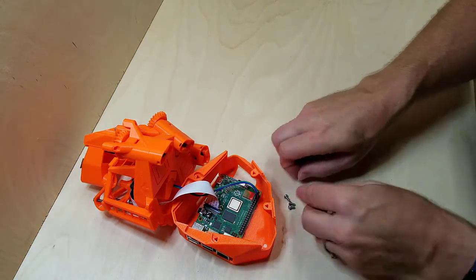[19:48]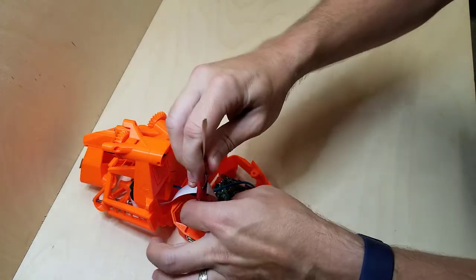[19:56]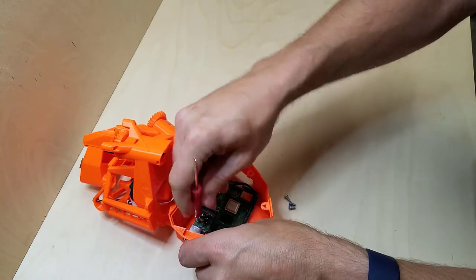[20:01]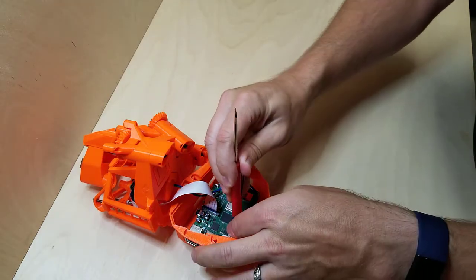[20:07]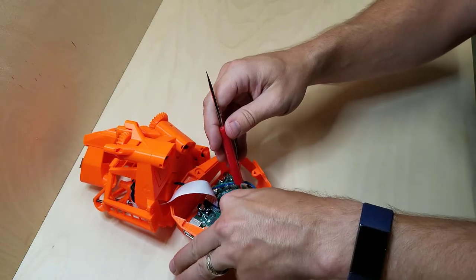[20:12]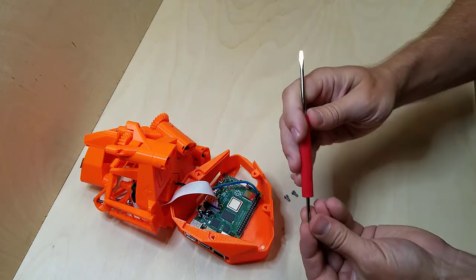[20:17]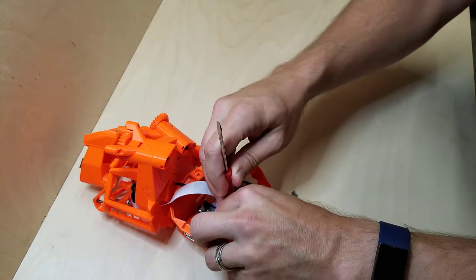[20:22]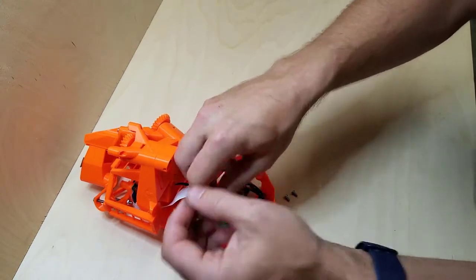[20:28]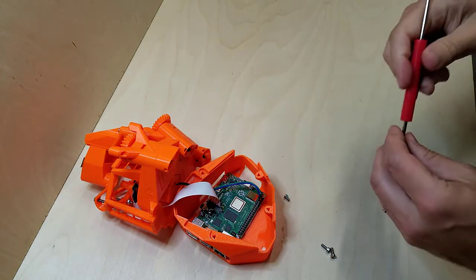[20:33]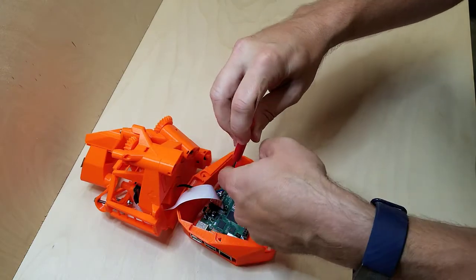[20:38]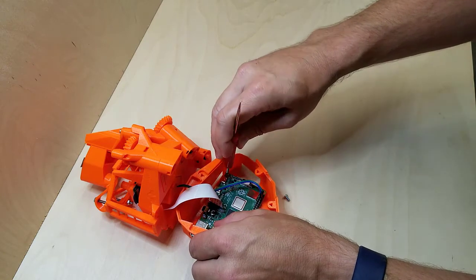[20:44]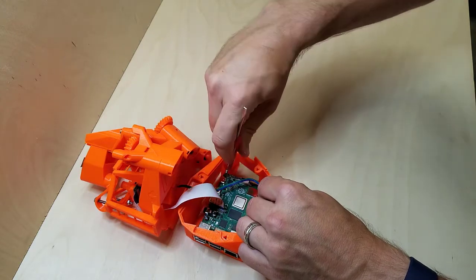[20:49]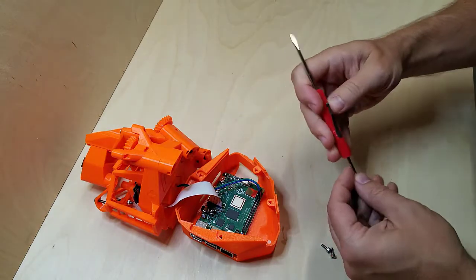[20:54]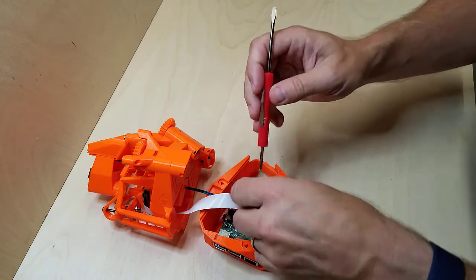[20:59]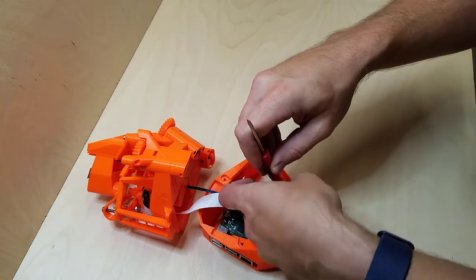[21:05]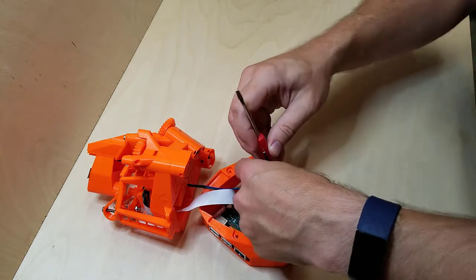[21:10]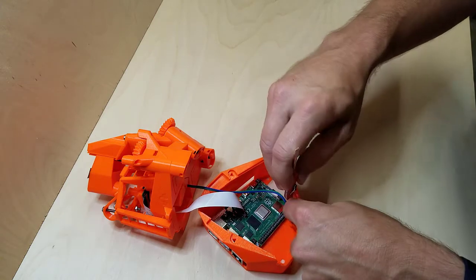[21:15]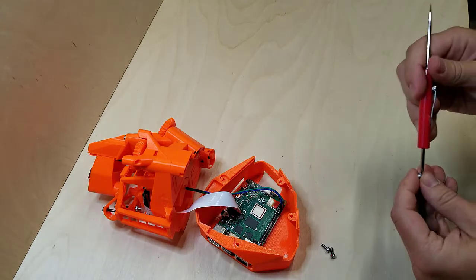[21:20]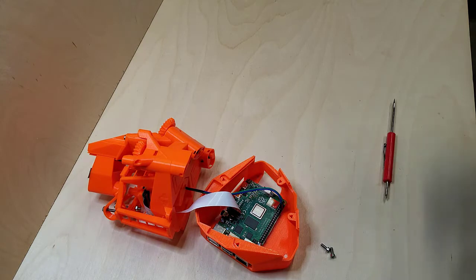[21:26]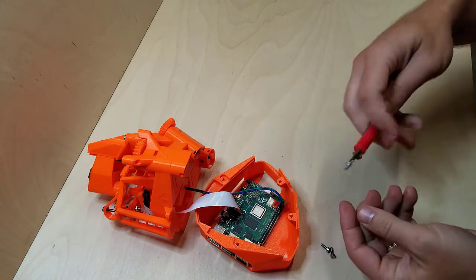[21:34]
And I haven't tried to do it this way before, so let's see if it works. Screwdriver. Okay, a little trick I learned here is if you have a strong earth magnet, you can just attach it to your screwdriver, and that will help hold your screw on.
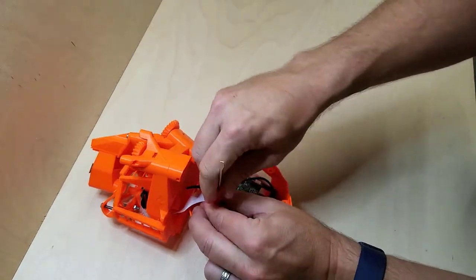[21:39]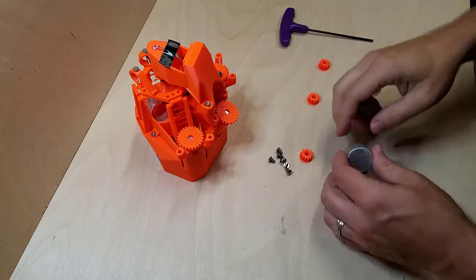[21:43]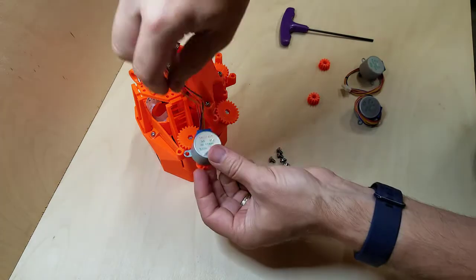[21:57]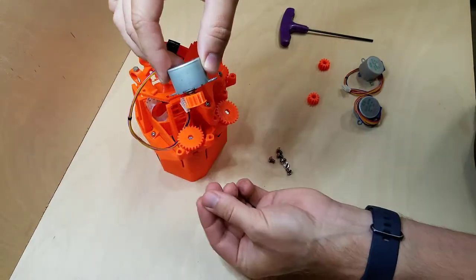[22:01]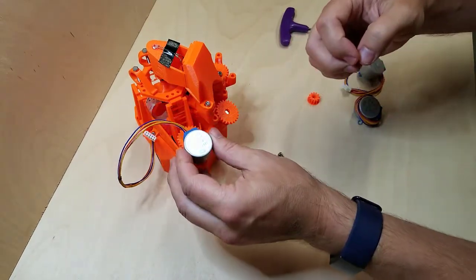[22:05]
Now we will attach the motors. I have a little bit of painter's tape I've put around the end here, just enough to get this to be snug on there. We don't want it falling off. See, the motor is going to be mounted like this, and if it was too loose, this would just drop right off. So we're going to do that. Let's get this first one on here.
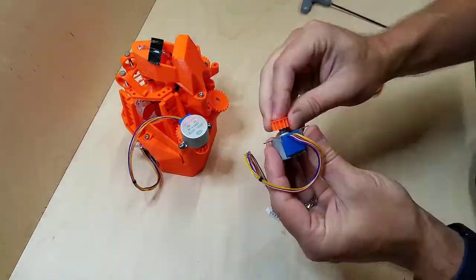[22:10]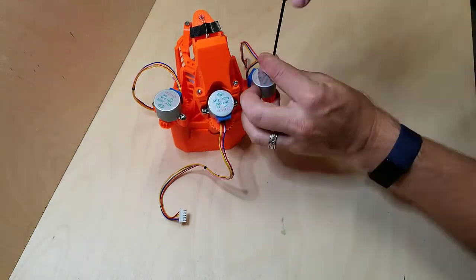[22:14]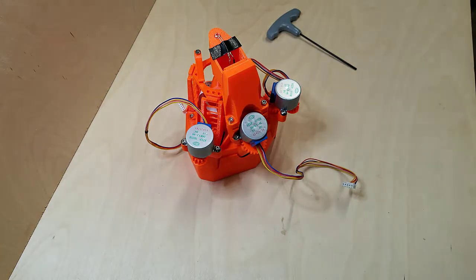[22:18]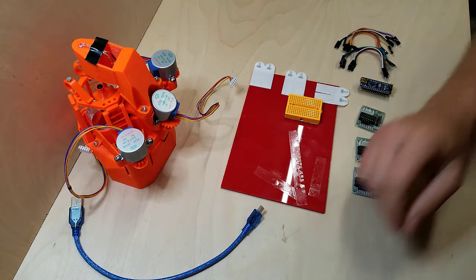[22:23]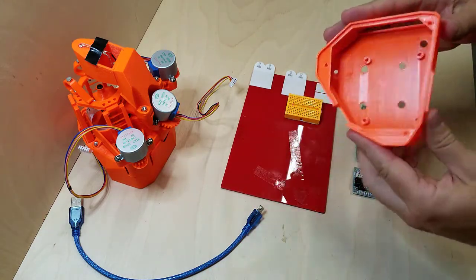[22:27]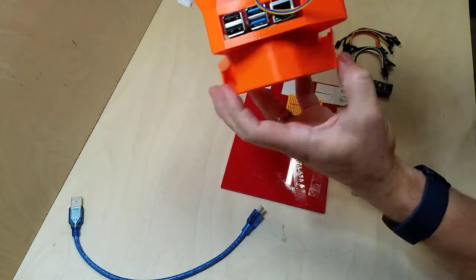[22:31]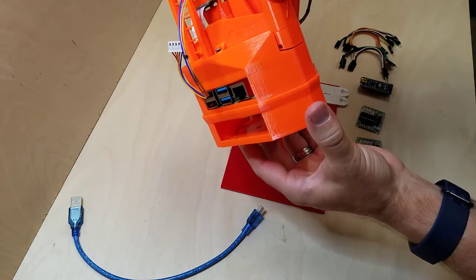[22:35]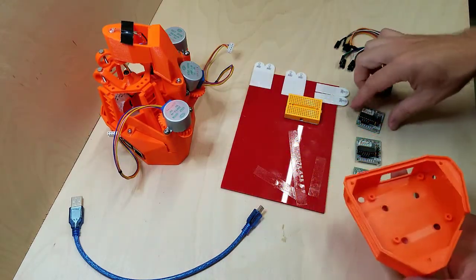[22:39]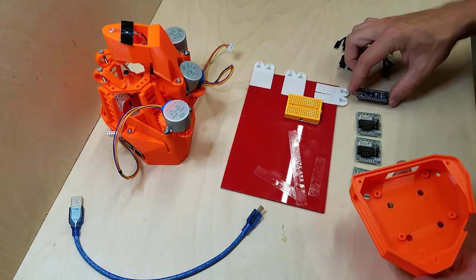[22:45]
All right, now we're going to do the motor controller part. Now note that there is an enclosure that you can print that would go right underneath all of this, that goes like that for the controller parts. However, I was not able to get all of these individual motor controllers to fit in here along with the nano to work with them and all of the wires.
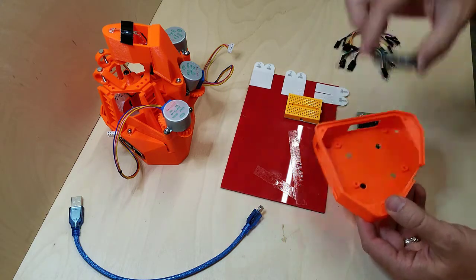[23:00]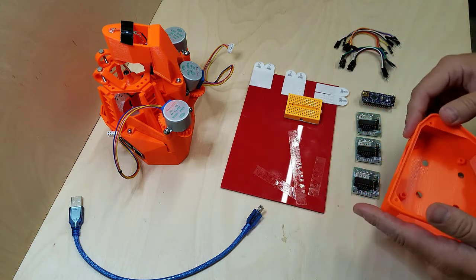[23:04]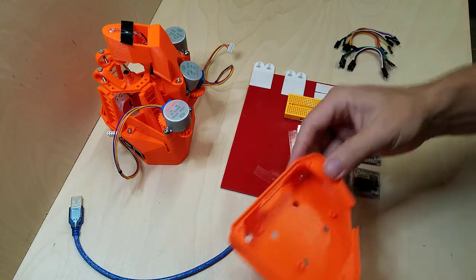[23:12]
So it's actually designed really well for a Sanga board, which is a custom board that has all three of these controllers built into it. And then you mount the nano there. However, you can't get those right now. They're in the forum, you can go add your support. They're trying to get a bulk purchase together. So if you're interested, you can head over and see if they're still doing that.
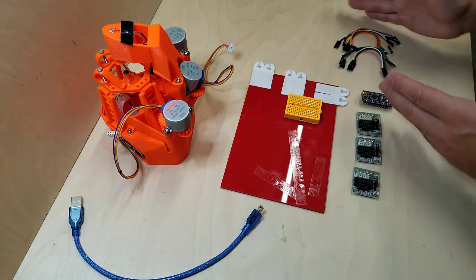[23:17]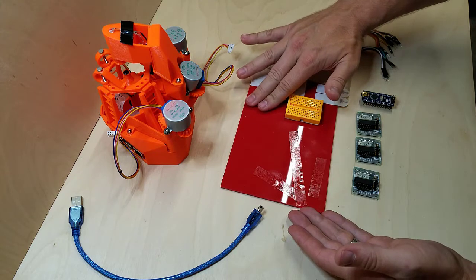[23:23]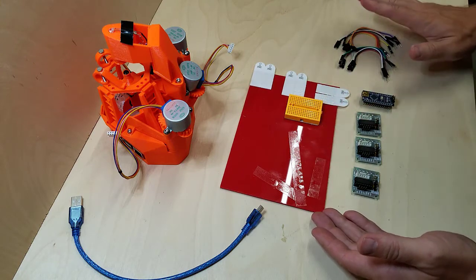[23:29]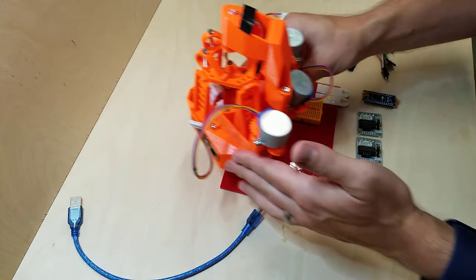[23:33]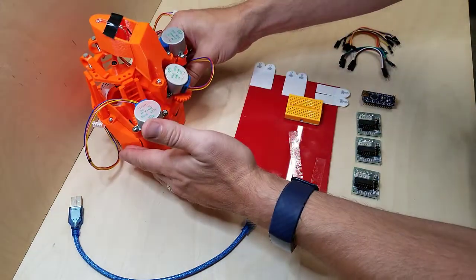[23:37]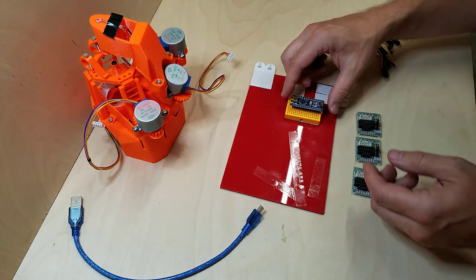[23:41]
So my solution was to put all of those guts on the outside. So I was just going to use some double-sided tape, sticky stuff here, on a board and use a mini breadboard here. And this was just large enough for all the connections that I needed. So I'm going to be placing the microscope here. The nano is going to go here. So I'll put that on now.
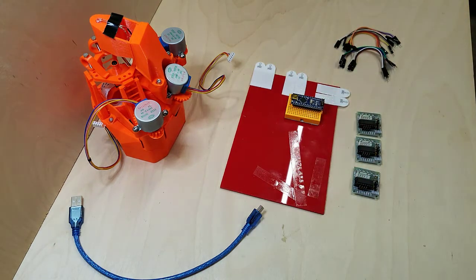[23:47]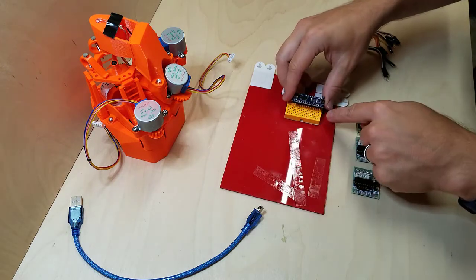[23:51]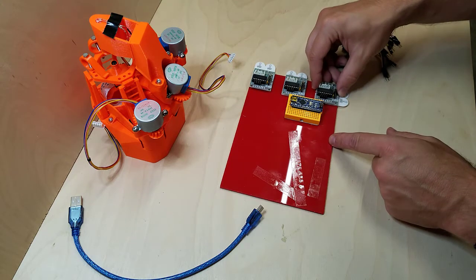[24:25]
Okay, and I'm going to put the first pin all the way at the very end here. And if you're trying to do this exactly the way I am, I only have one row of pins showing easily out this side. Now on the documentation you'll find online, it shows that the software for the nano is set up for the x-axis to be plugged in here, the y-axis to be plugged in next, and then the z-axis to be plugged in.
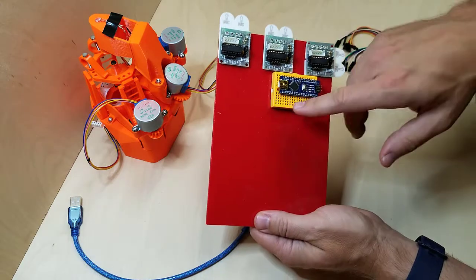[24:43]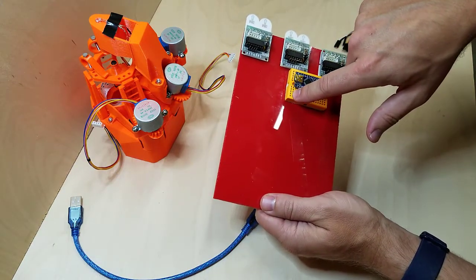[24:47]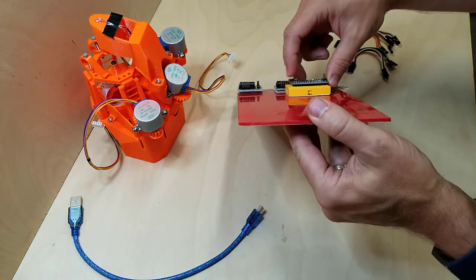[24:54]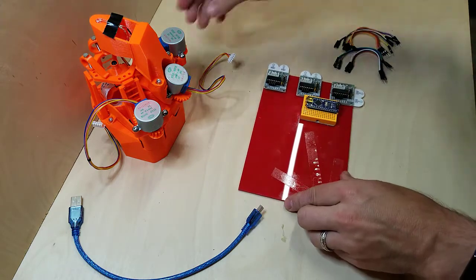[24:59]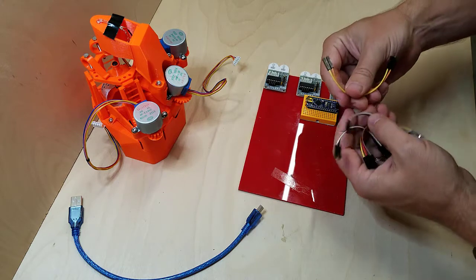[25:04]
Now what I'm also going to do on this breadboard is run a power bar. So I'm going to run plus 5 or plus 7.5 and ground in the first and then second bar of power. And that doesn't touch the nano. It doesn't touch any of the pins of the nano. And so I have taken these and pulled them off into strips of 2 for power and 4 for the stepper motor controllers.
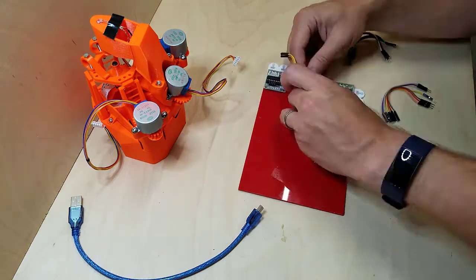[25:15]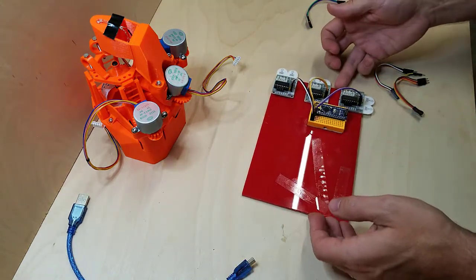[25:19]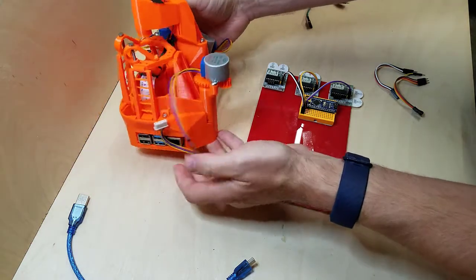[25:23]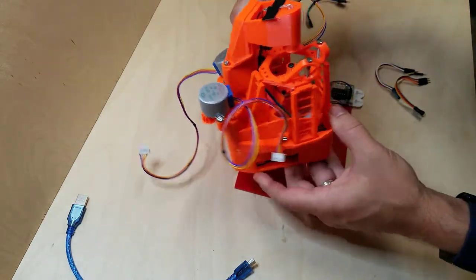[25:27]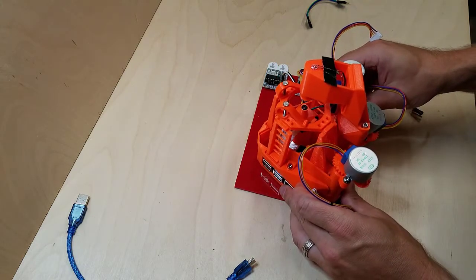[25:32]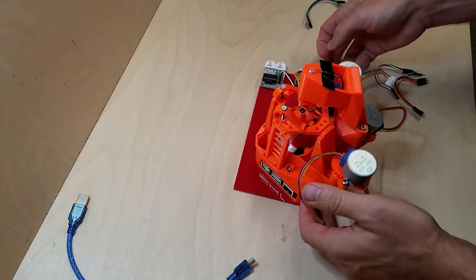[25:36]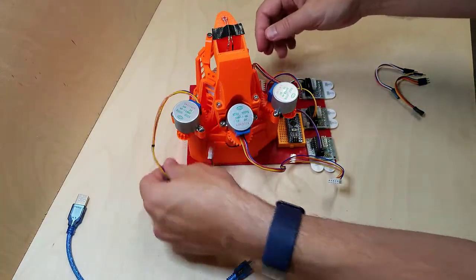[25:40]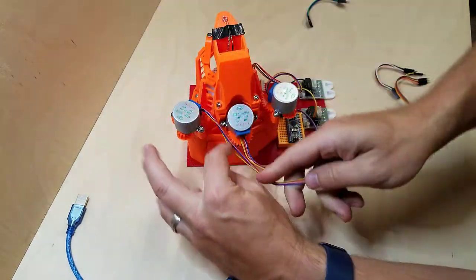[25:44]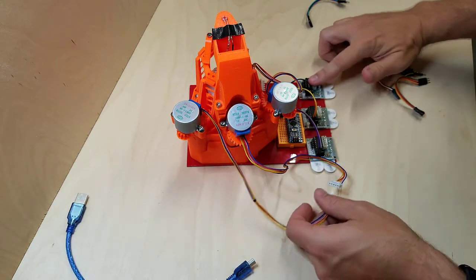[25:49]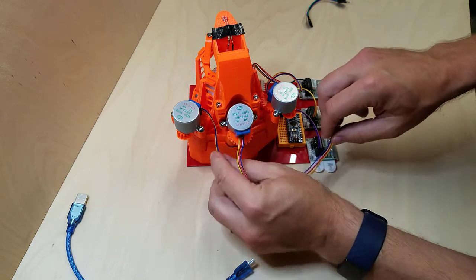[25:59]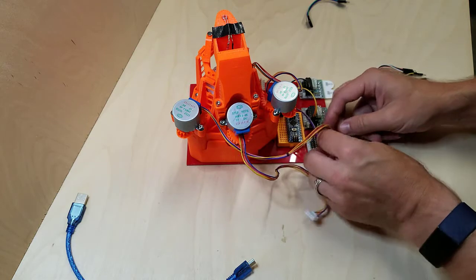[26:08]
I don't necessarily have X, Y, and Z plugged in this way because of how the wires reach. So let's see here. This is going to block the view. Let's try it out here. All right, so this wire. This is the x-axis, so this would normally have to be plugged in all the way up here at the top, but that isn't going to work so well. So I am going to put it at the bottom, and I want to be mindful of this gear rotating here. I don't want these wires to rub against it, so I'll probably need to put a piece of tape here to hold those wires down. So x is actually going to be here, so that means x has to be plugged into the top.
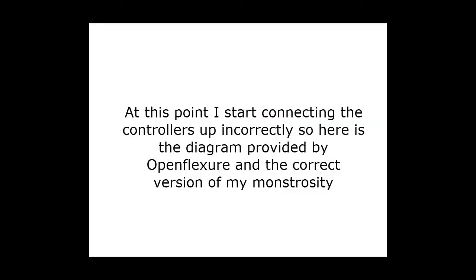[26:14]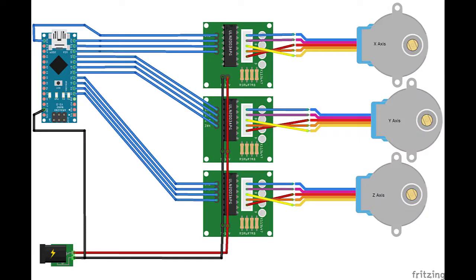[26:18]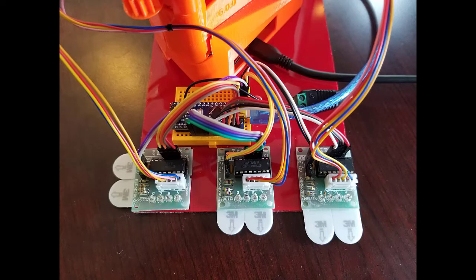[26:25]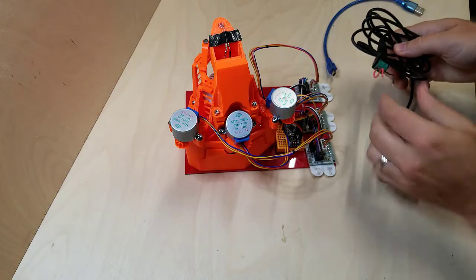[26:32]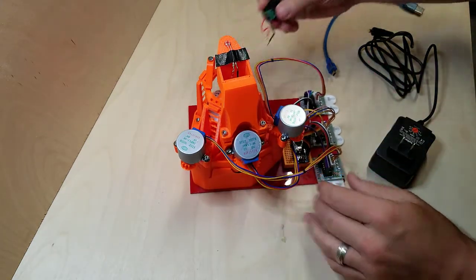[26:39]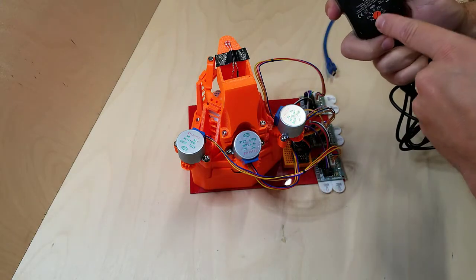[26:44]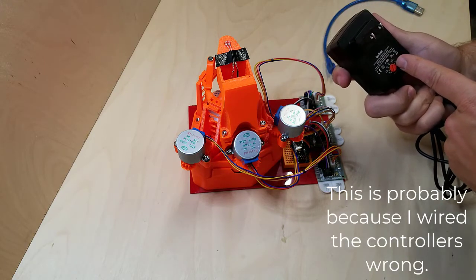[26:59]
So we need two power sources, one for the motors to keep them isolated from the power for the Raspberry Pi. So I found this power supply, which I like quite a bit, and it lets you set the voltage. And so I've set it to 7.5. Even though these are 5-volt motors, I found during auto calibration that they couldn't turn these motors at all at 5. At 6 and up to 7.5, there is a little bit of struggle. But 7.5 seems to be the least amount of voltage you need to provide for it.
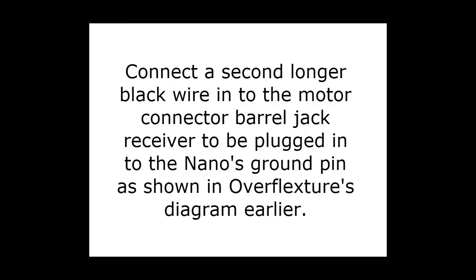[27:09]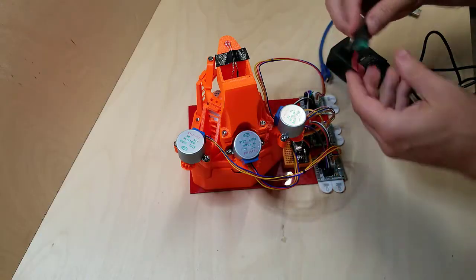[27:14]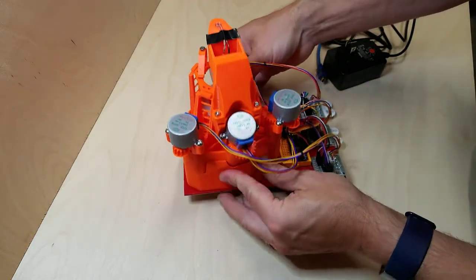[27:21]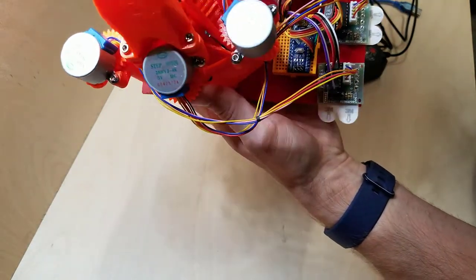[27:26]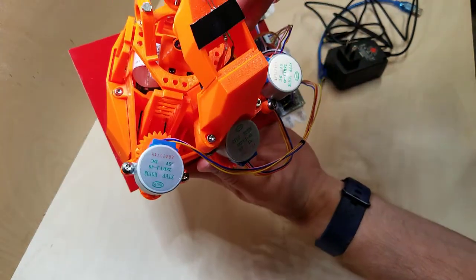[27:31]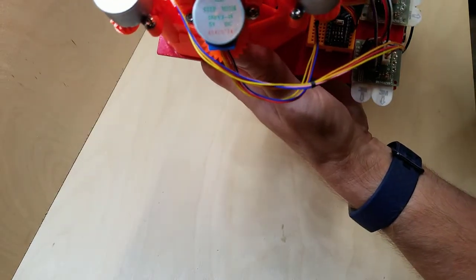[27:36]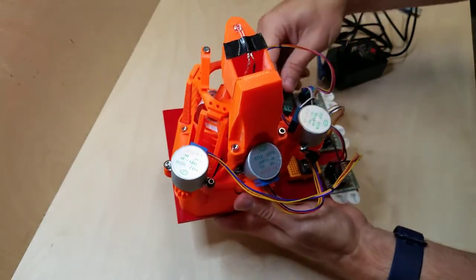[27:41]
So I'm going to plug this in, and that will then get plugged into here. That becomes the power for my motors. And again, I'm plugging these into the top bar and the second bar down, which is where I've done my interconnection of plus and minus for the motors. And that will just stick out here.
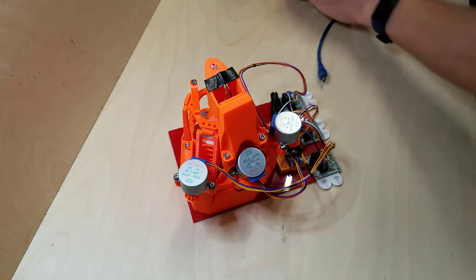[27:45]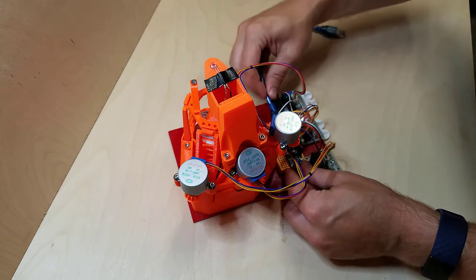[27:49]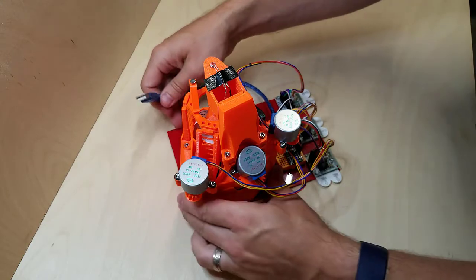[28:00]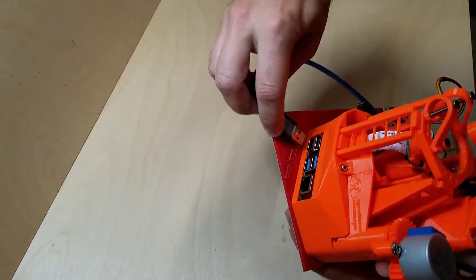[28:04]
Now I'm going to plug in the data connection, the USB. And this will be identified by the Raspberry Pi software to see that the nano is connected, and then it will be able to issue commands to the stepper motors. All right, we're going to plug it in for the first time.
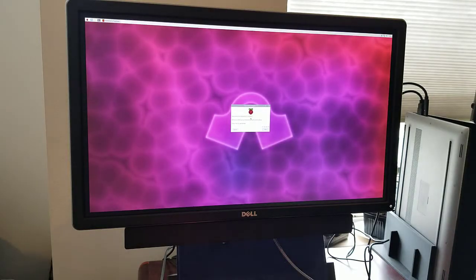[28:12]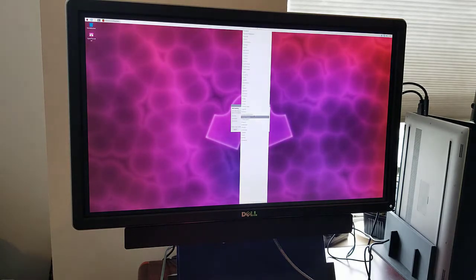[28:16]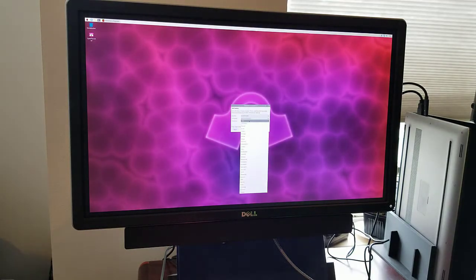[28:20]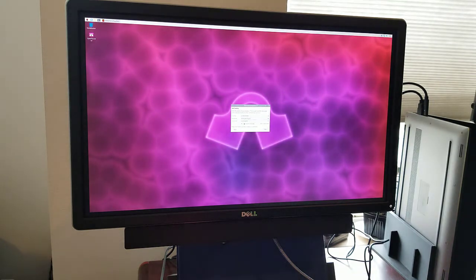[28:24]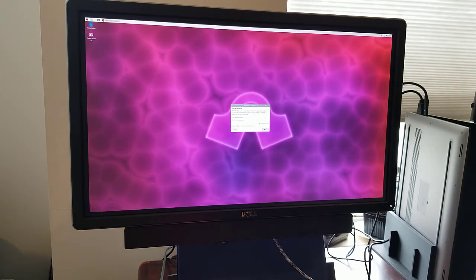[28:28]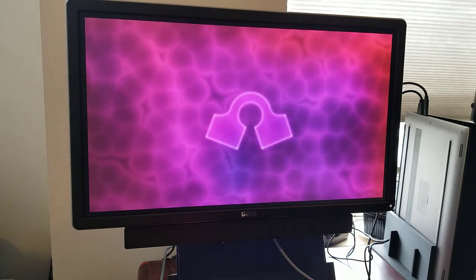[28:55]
Okay, I'm going to go with the default that Openflexure uses, which is Openflexure. And I do have a black border. I'm going to skip Wi-Fi since I'm hardwired on my network. And I'm going to skip this software update. Yeah, we'll restart, sure.
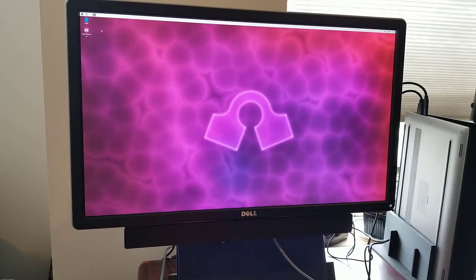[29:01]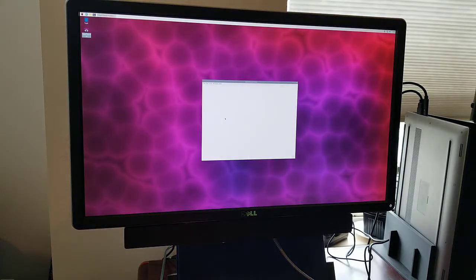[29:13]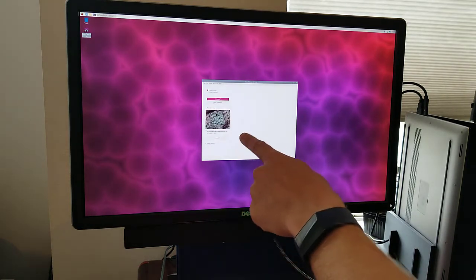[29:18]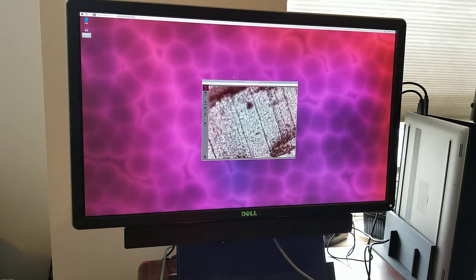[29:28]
Okay, this is good. We can see the preview from the camera. And I'm going to connect locally. There's the preview. Now, a problem that I keep encountering is that that preview is in front of all the other windows, so I have to move the window behind it out. And I'm going to skip the tour, and I'm going to do calibration.
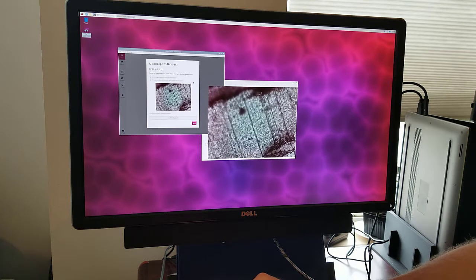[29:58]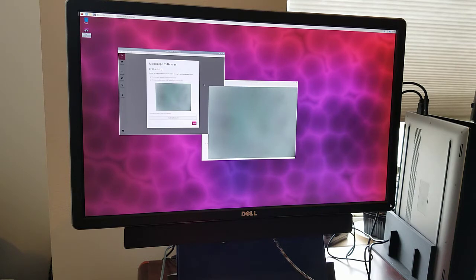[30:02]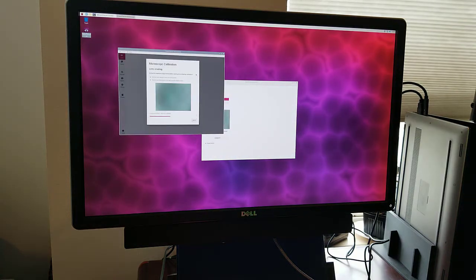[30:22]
Okay, so the lens shading calibration needs to happen first, but you need to not have a sample on the microscope. Let's do auto-calibrate. And we want to make sure that our illumination is in the position we want it to be in. Yeah, sure, we'll go with that. Right, it has calibrated the lens shading. I'm going to click next.
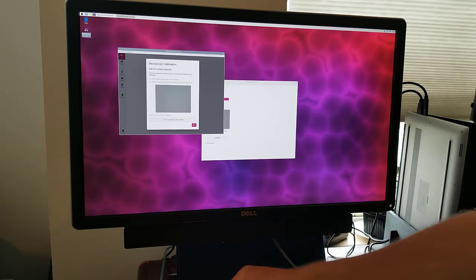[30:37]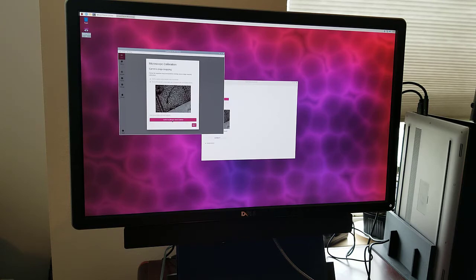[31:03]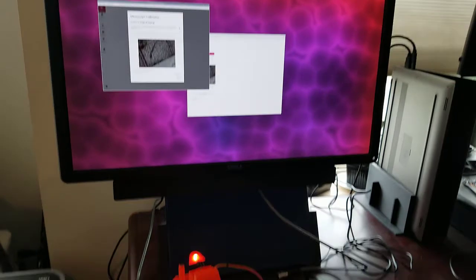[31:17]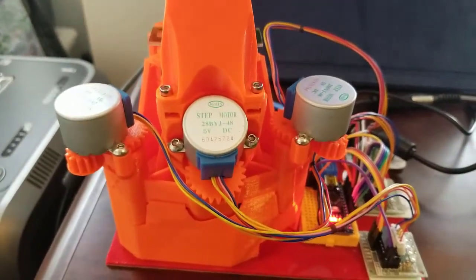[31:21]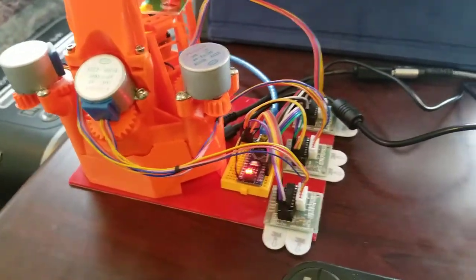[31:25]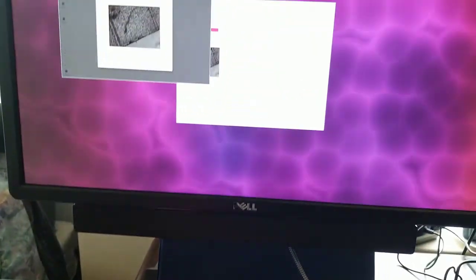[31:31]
Now it needs to do the camera stage mapping, and that one we do need a sample. And it wants the picture to be pretty well in focus, which means that we have the camera moved to pretty close to in focus before we even start the calibration. So I'm going to do that, and now I'll click auto calibrate. Now while this is happening, I'm watching the motors to make sure that when I hear sounds that they're actually moving. And you're going to see lights on the motor controllers light up. That'll get started in just a moment here.
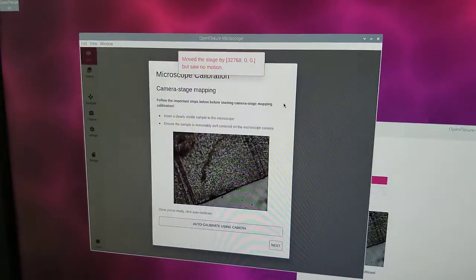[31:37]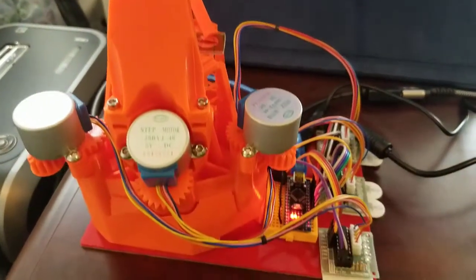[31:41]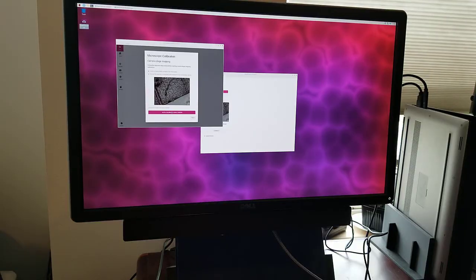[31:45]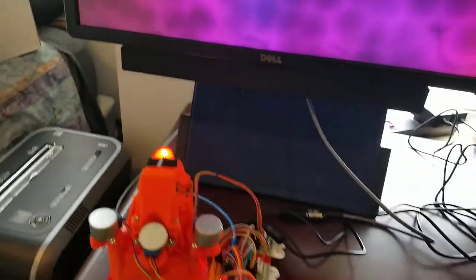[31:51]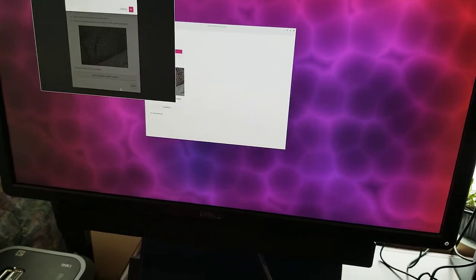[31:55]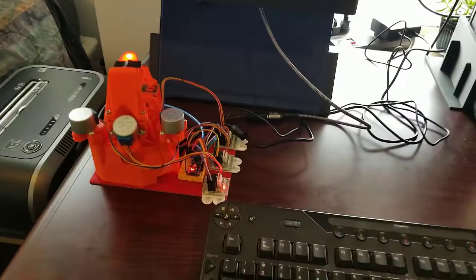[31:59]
All right, well, we got this error. So there's a problem sending commands. We're getting these motors to actually move. I'm gonna do some troubleshooting. Okay, doing a little wire wiggling. It looked like I had a loose cable. So let's try that again. Do calibrate, start, and let's see.
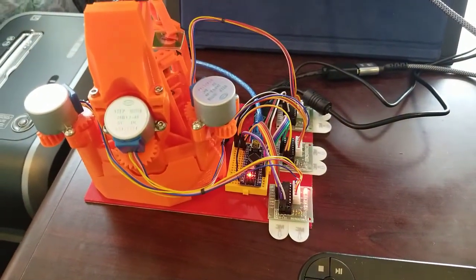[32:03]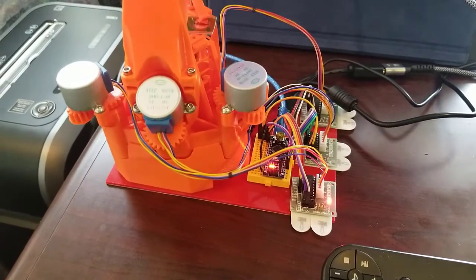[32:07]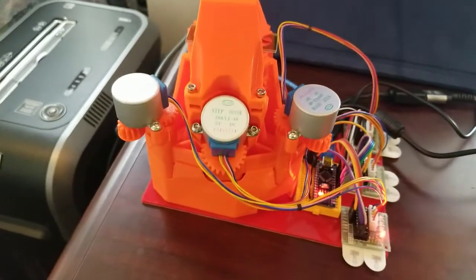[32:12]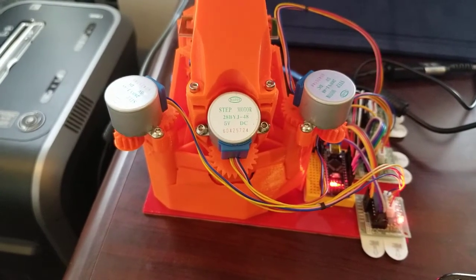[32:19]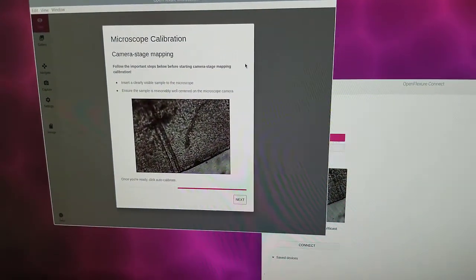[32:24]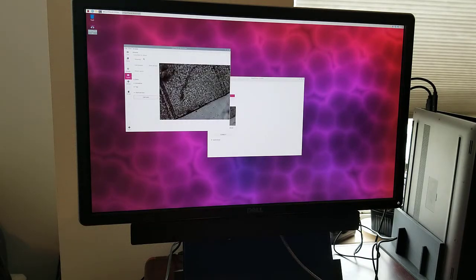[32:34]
We can see some light action going on here with one of the motor controllers. I saw this one move. There it is. We can see that the picture is moving now. And now I want to take a tiled picture set. So let's click on Capture. Let's go with full resolution. We'll store the raw data that can help, from what I understand, in the stitching software.
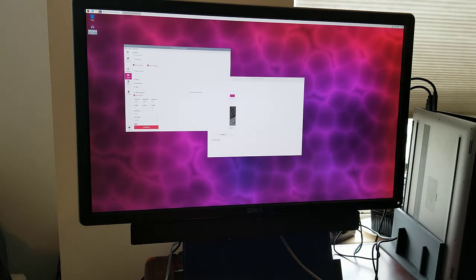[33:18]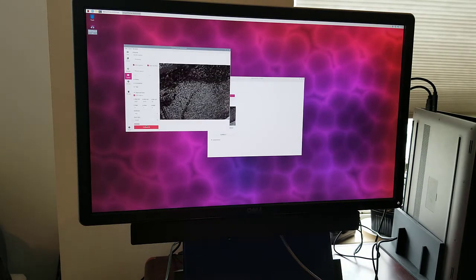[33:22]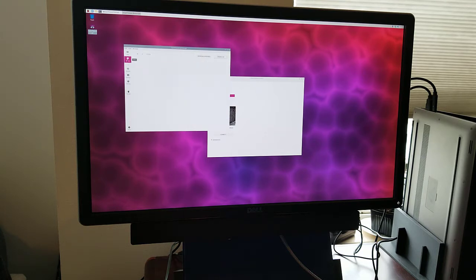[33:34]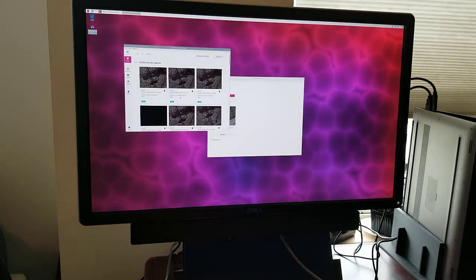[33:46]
And down here, I'm sure we'll do fast focus, and let's do the snake style. Right. It finished the scan. So now we have a set of pictures in the gallery. Refresh right here. There's all these pictures. So the next step is to transfer these to my other computer where we can stitch them together.
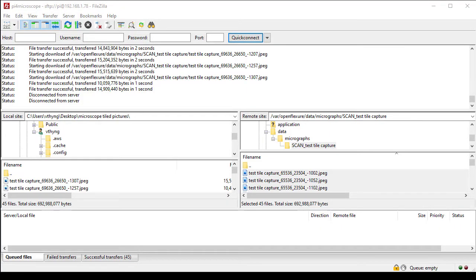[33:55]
All right, now I need to copy all of those pictures that were taken over to my desktop, where I have Microsoft's Image Composite Editor. That software will stitch them all together into a bigger picture. So I have connected to my Pi. I have navigated to var, Openflexure, data, micrographs, and the folder that it created with all the pictures. And I've copied those over, I dragged those over here in FileZilla to my local folder.
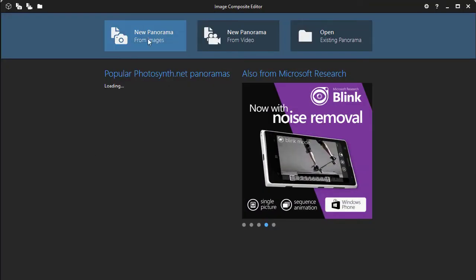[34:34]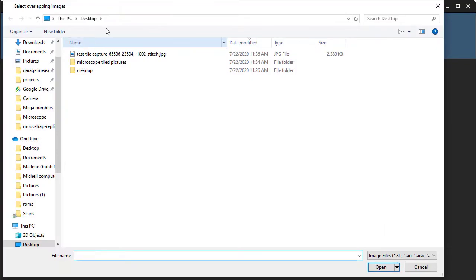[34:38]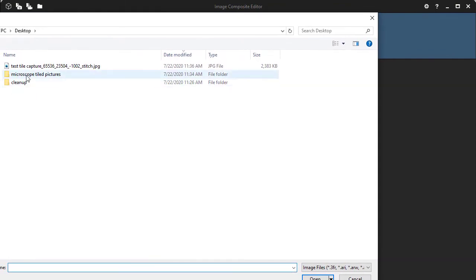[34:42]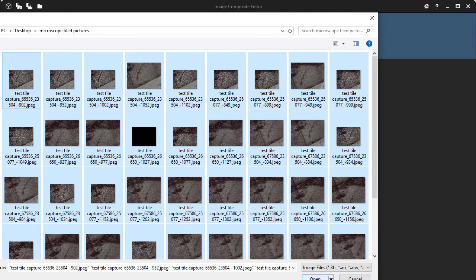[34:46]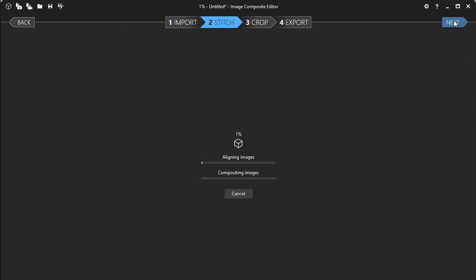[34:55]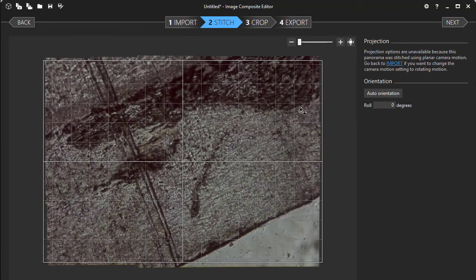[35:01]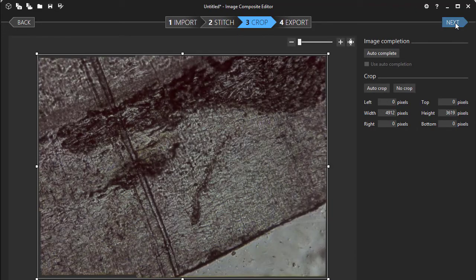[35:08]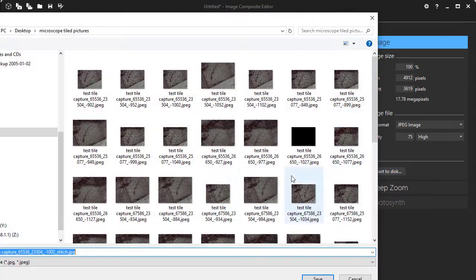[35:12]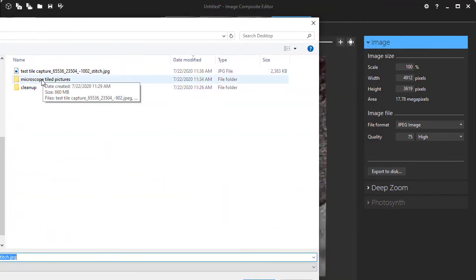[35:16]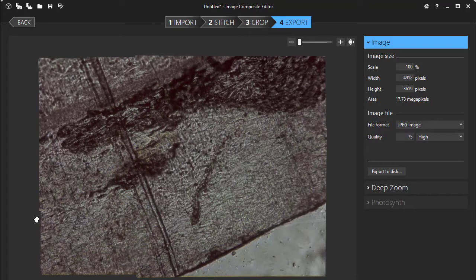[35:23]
Now let's open Image Composite Editor. We'll create a new one here. And I had a couple of errored images. That's okay though. I'm going to click Next. This is using the default settings. All right, and now it's showing us this is the big picture. Again, I'm going to use all the default settings here. And now I'll export disk, go back a folder. Here. And we have a larger image created by all of those smaller images.
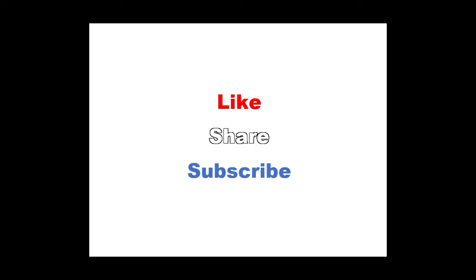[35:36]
So to conclude, you have seen what you need for a microscope that can autofocus, take several pictures to be made into one bigger image, and do it for about $200. I hope you found it informative.